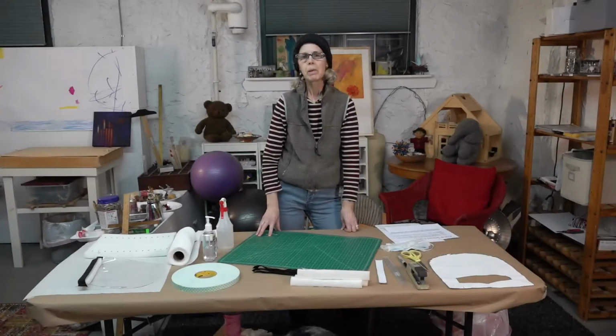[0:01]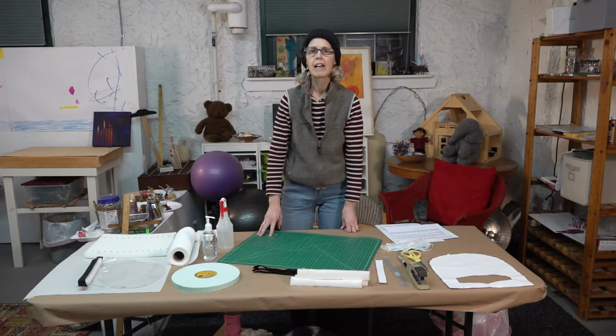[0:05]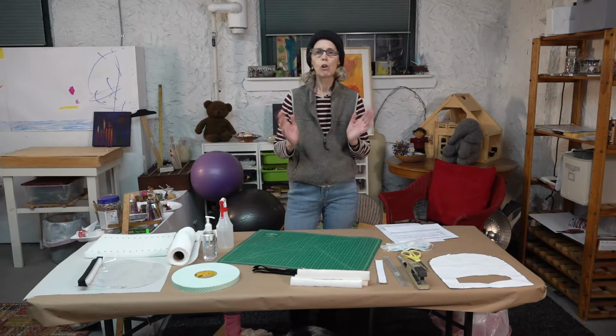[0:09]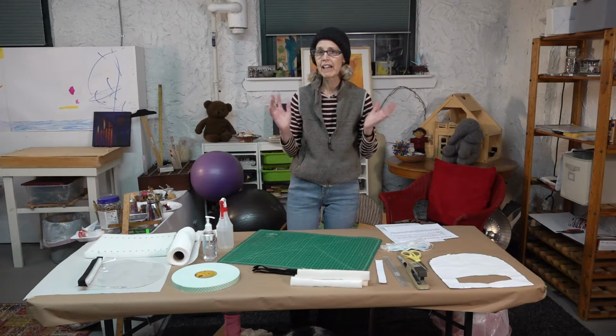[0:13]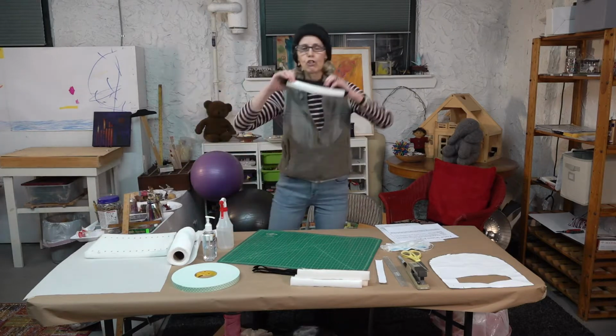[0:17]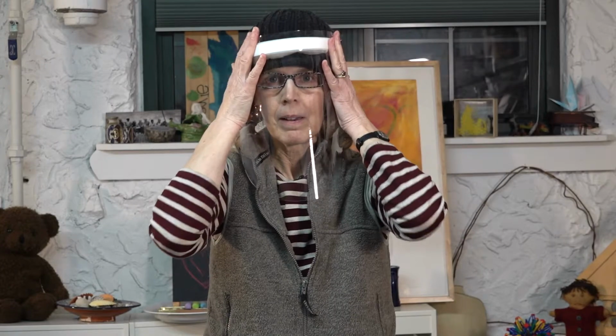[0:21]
I know many of you are already making face masks, and there are lots of videos out there to show you how to do that, and that's really wonderful. Three weeks ago, I started making these face shields. As you can see, they cover the entire face. My sister-in-law, who's a doctor in Boston, said that there weren't enough of them to go around, and doctors and medical professionals really need them.
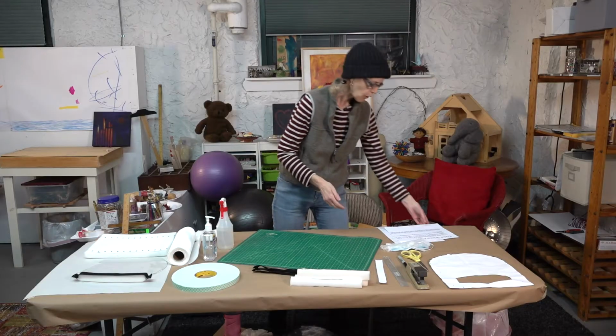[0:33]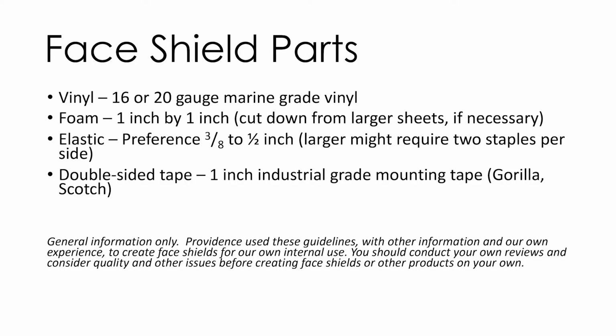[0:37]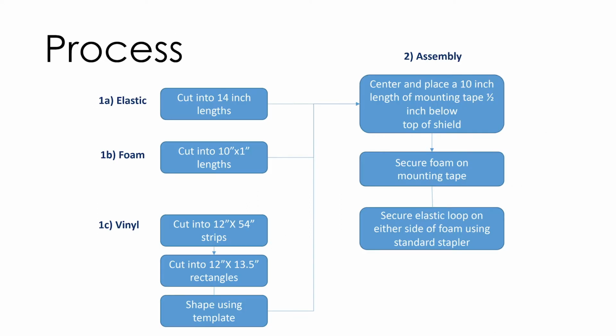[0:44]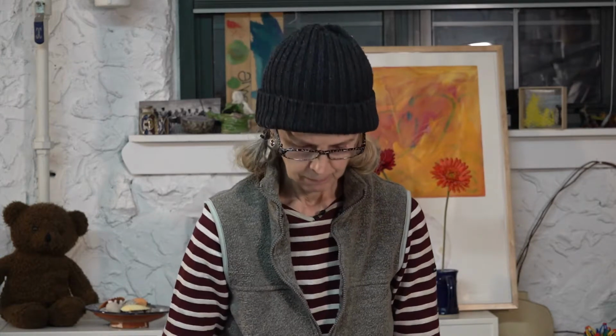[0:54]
My goal is to teach you how to make them using the PDF from Providence Hospital in Seattle. It's a three-part PDF that shows you the parts that you need, the process, and a diagram on the third page that shows you how to make a template. They're really easy to make. I've made 60 myself and have distributed them to various hospitals in the New York City area. Let's get started.
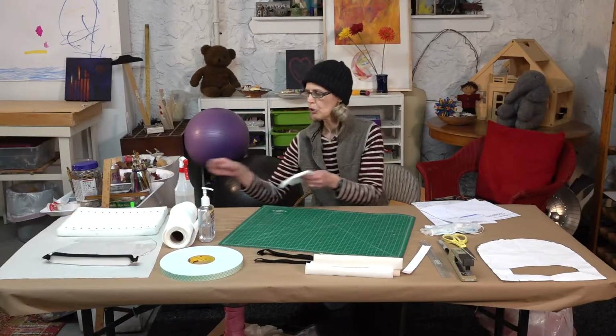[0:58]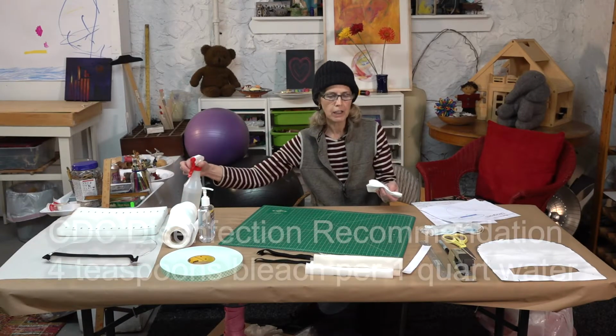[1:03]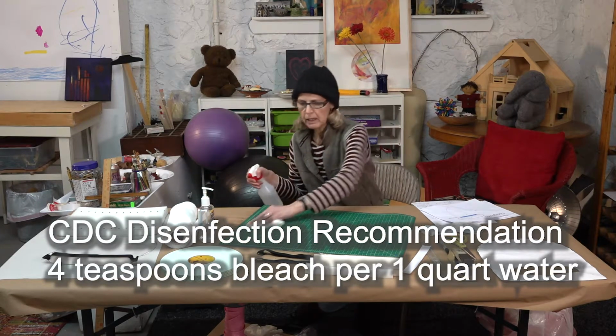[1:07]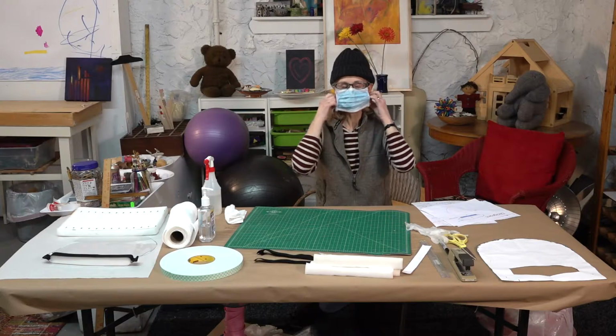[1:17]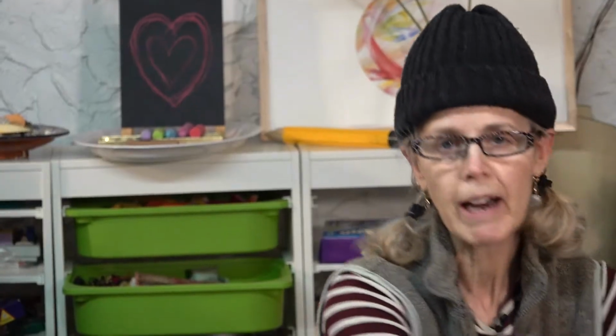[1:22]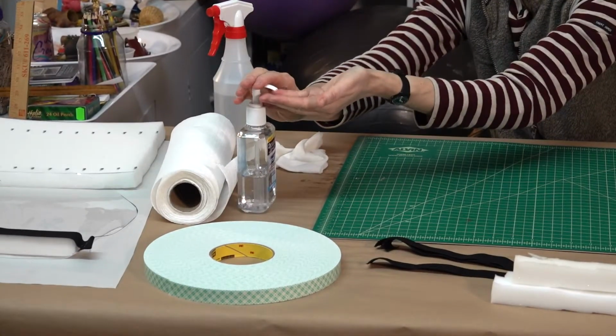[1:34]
The first thing you need to do is make sure that you have a completely clean working area. I like to use a cutting mat and I spray it down with Clorox and water to make sure it's completely clean and sanitary. Usually I wear a mask to make these, and you should too. But for the purposes of demonstration, I'm not going to wear it. It's recommended that you also wear some gloves, but I find it's very difficult to do this fine detailed work, especially using tape, if you have the gloves on. So you do a big glob of Purell, and then you wipe your hands until it evaporates, making sure you get all your fingernails.
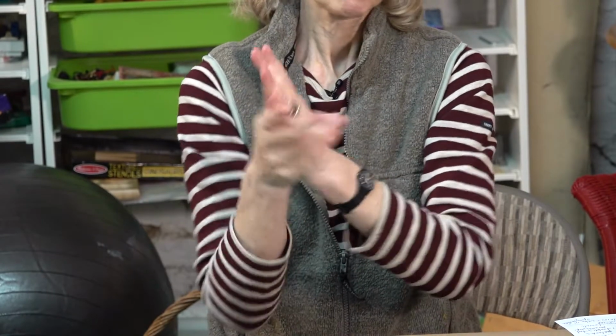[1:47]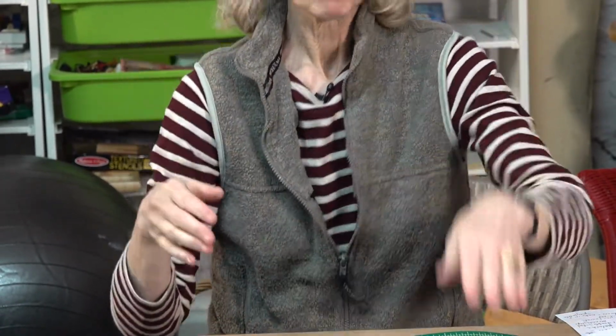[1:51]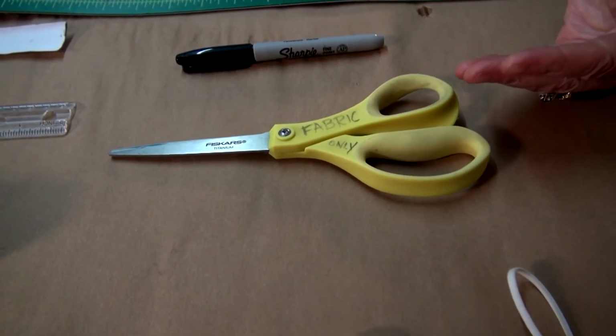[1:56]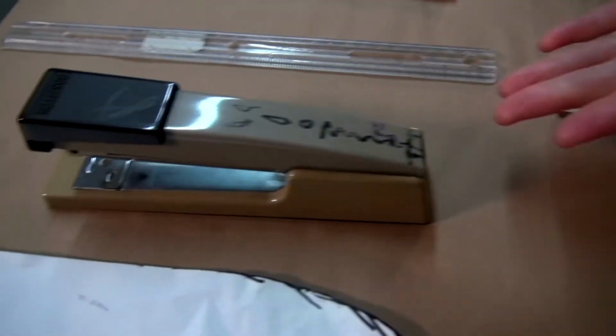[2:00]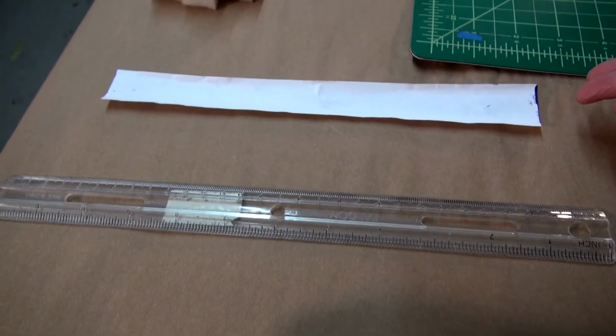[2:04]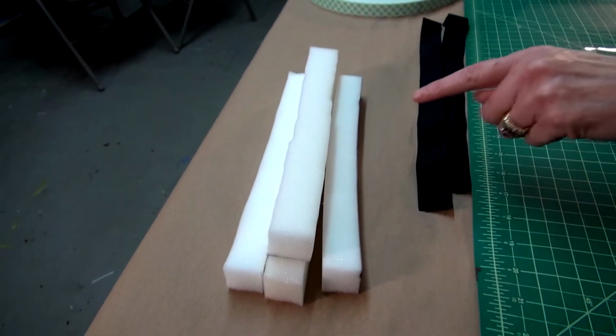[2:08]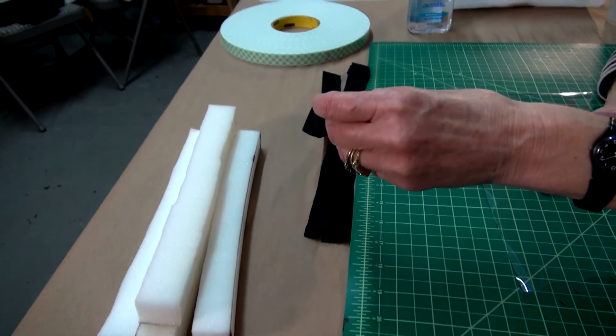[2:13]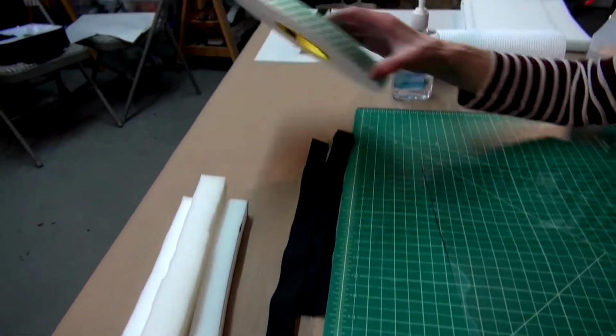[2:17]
So now I'd like to show you what supplies you need to have on hand. You'll need a sharp pair of long-bladed scissors. You'll need a Sharpie. You'll need a regular stapler, a ruler, a 10-by-1-inch strip of paper, some upholstery foam cut into 1-by-10-inch strips, some elastic 1-by-14 inches, and you'll need double-sided tape. You'll also need marine-grade vinyl. I was able to get 10 yards of it on Amazon. The specifications call for anything from 16 to 20 gauge. This is 20 gauge.
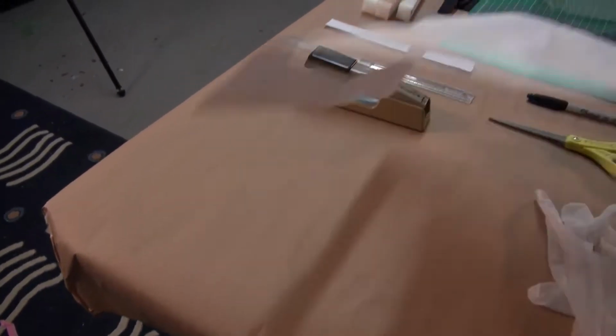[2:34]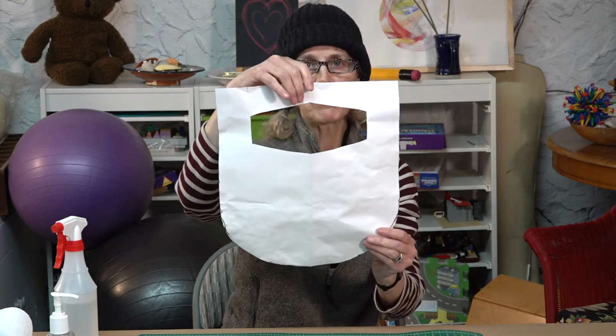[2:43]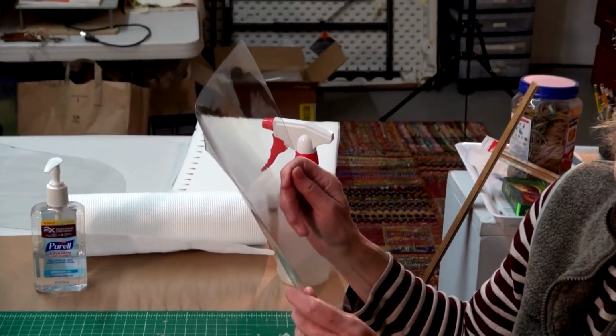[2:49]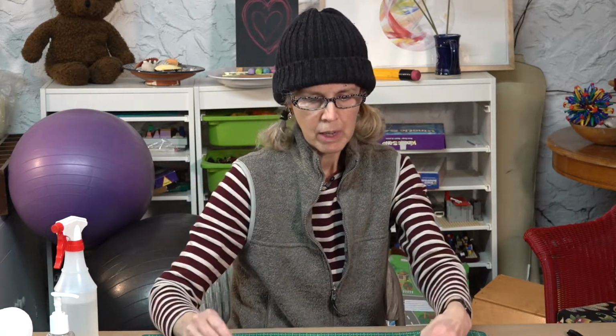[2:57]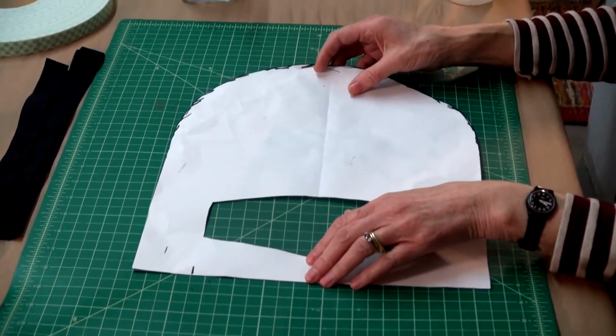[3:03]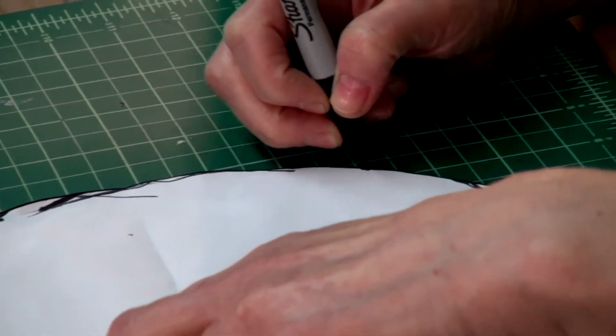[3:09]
It came in a large batch and I had to cut it down. I did that by using a template which I created from the PDF which I described earlier. Ignore this eye window at the moment. We'll talk about that in a little bit. I took the 10 yards and cut it into 13.5 by 12 rectangles. Imagine that this is an uncut 13.5 by 12 rectangle. I take my template and I line it up with the 12-inch side of the rectangle. And I take my Sharpie and I mark that curved edge on the bottom. And then I just cut it out with scissors. But obviously I've done that already.
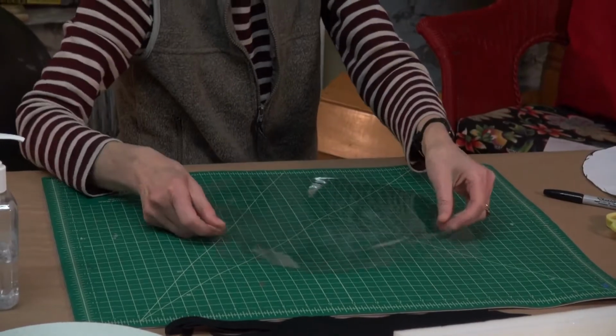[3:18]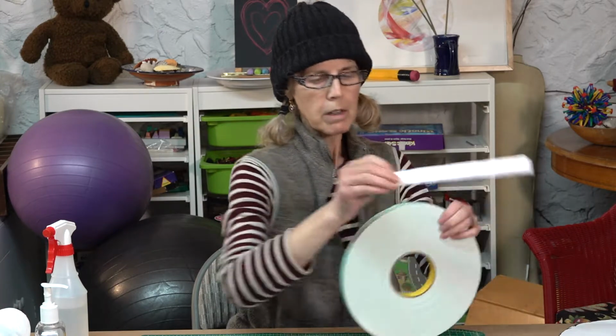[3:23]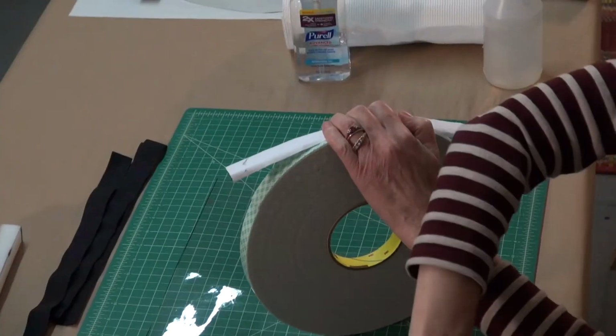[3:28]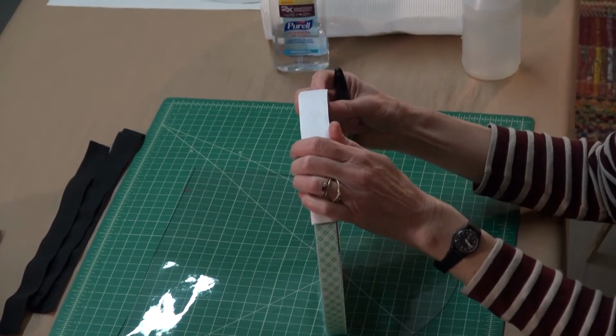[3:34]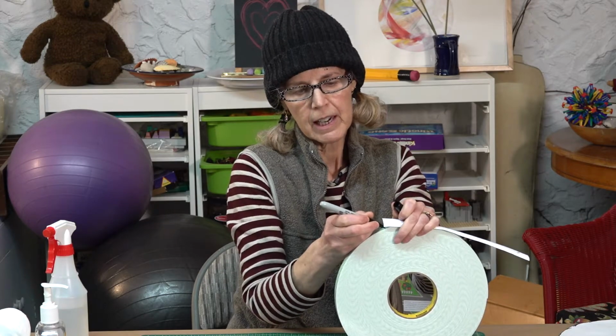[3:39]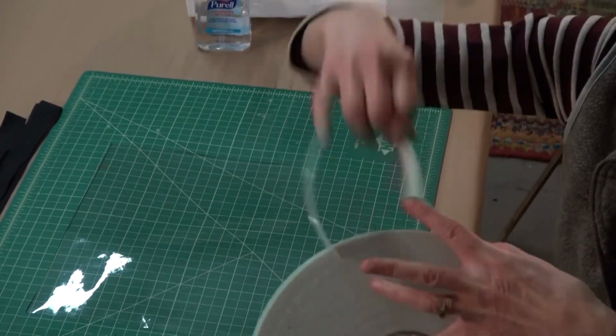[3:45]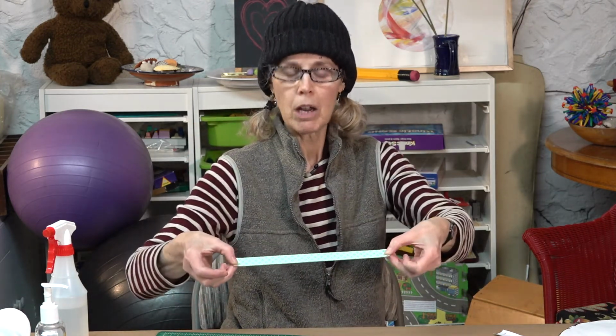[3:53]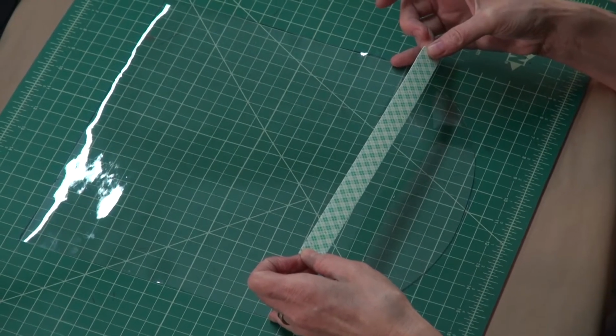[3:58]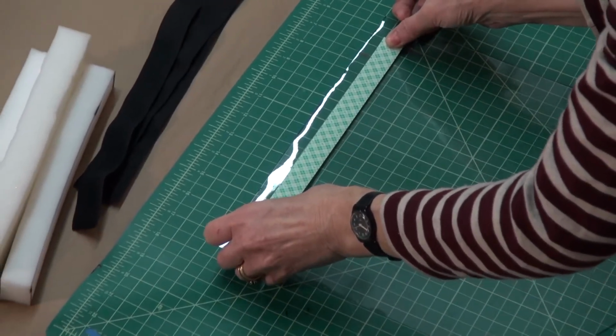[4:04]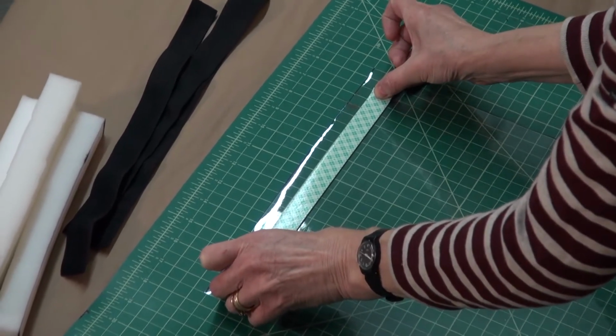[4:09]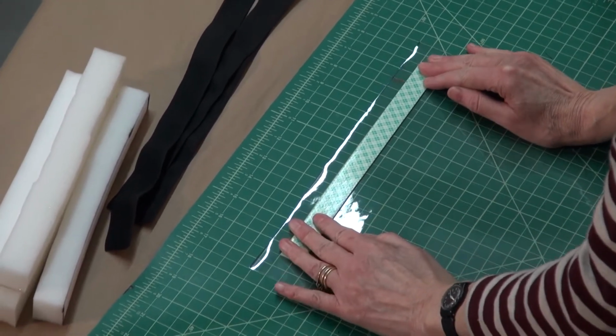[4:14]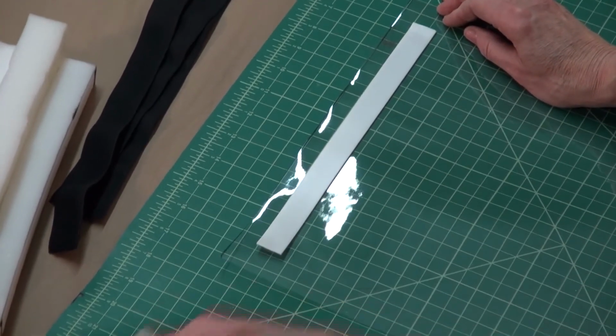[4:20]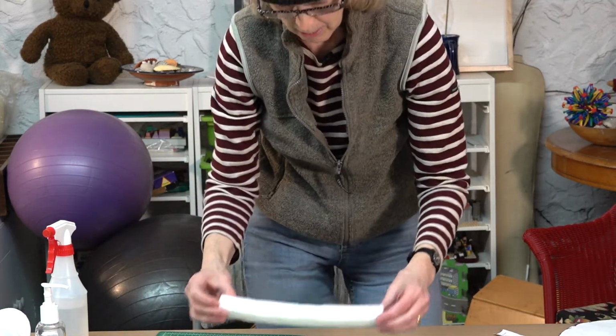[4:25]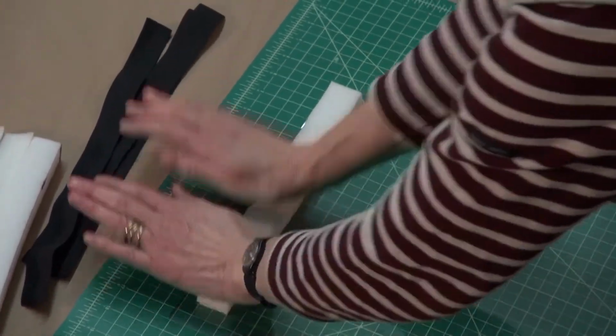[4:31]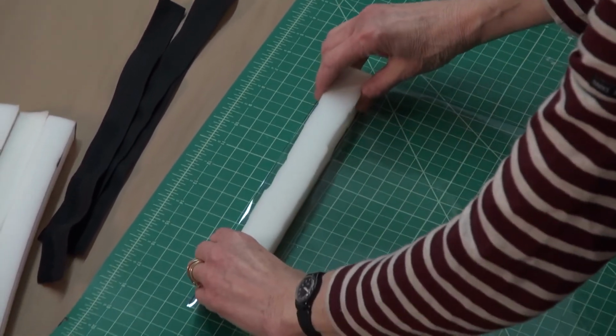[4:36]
The next step is to cut your tape. I use the 1-by-10-inch piece of paper for this purpose, lining up the paper with where the tape ended and my Sharpie to mark off the 10 inches. Once I have the tape, it's sticky on one side and with green paper on the other. I line up my piece of plastic so that I can see 1/2 inch from the top and 1 inch on either side using my cutting mat. And I place the plastic down and press it so that it's completely stuck on there. Then I remove the paper. I take one of my cut pieces of foam and I press that down onto the tape using my palms to make sure it's really stuck on there.
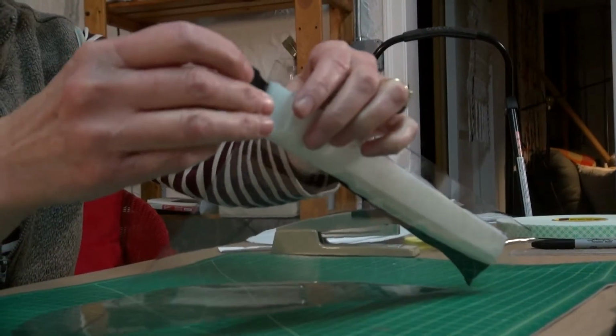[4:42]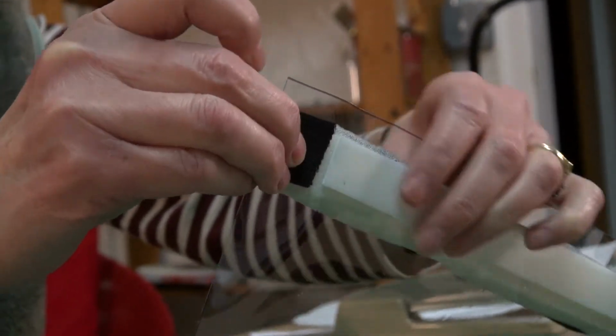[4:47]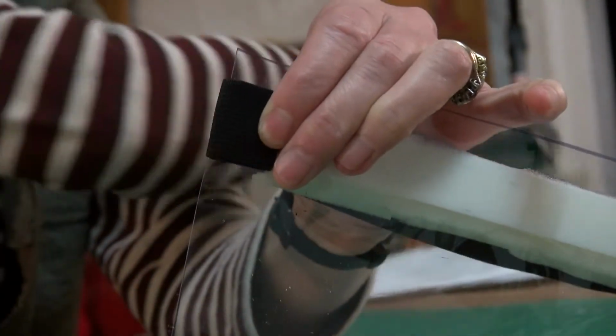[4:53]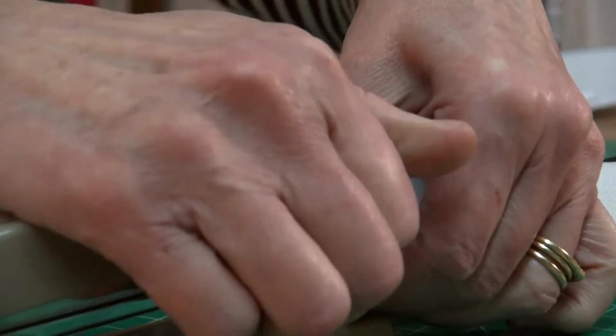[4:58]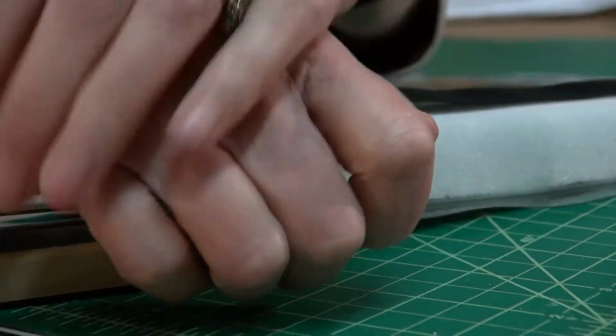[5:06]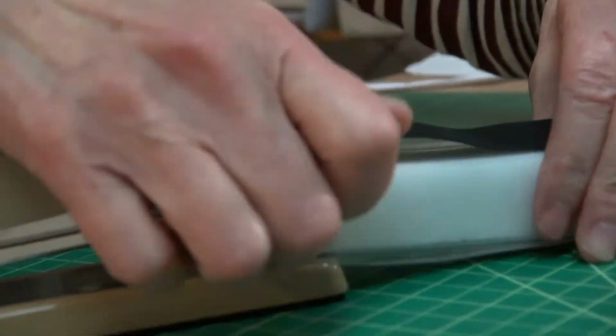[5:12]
Then you take one of your pieces of elastic and you tuck about 3/4 of an inch onto what will be the front of the mask and line it up with that piece of foam. Holding that in place, you can reach for your stapler and you will staple once. Twice. And I like to give it one more for good measure.
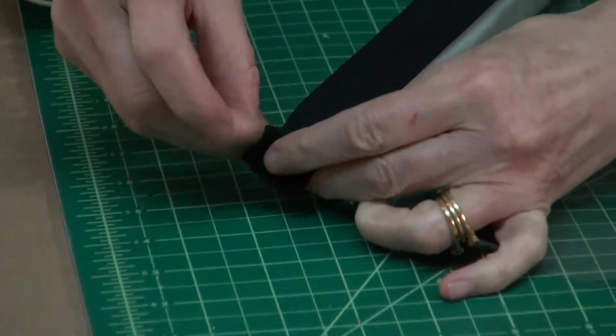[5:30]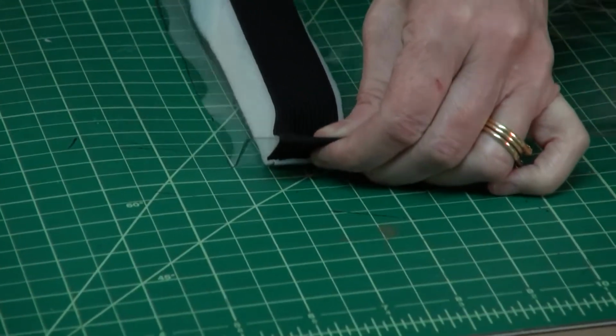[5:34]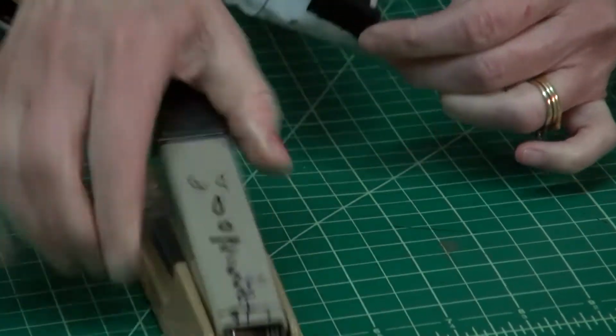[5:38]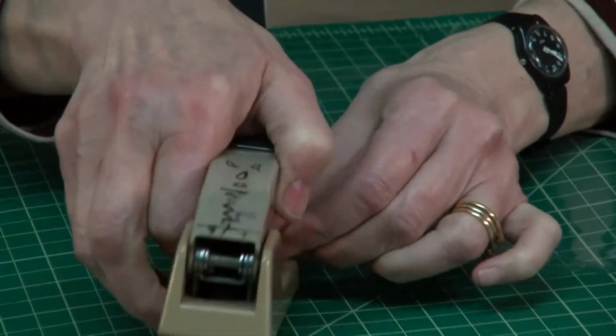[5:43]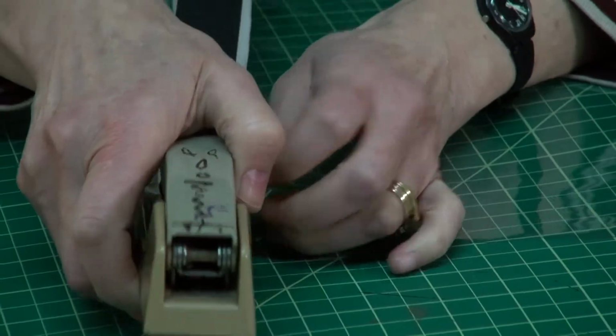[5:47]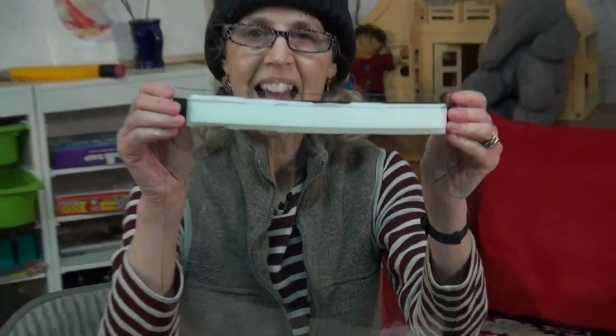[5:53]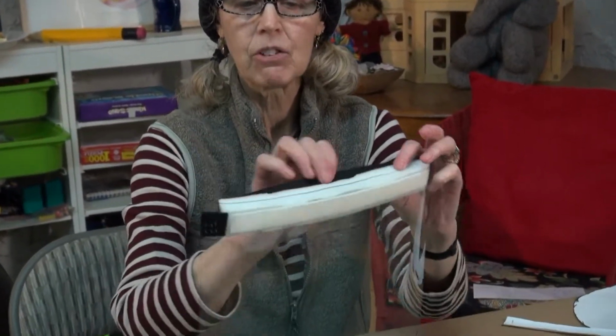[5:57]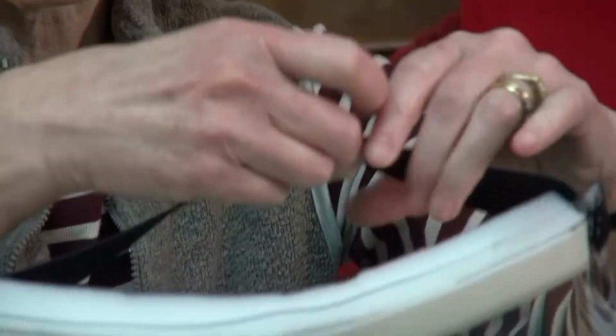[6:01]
Then you turn it around and take the other side, tucking another 3/4 inch. And this will be a little bit more difficult because the elastic is stretching now. And you do one, and then a second, and I like to give it that third, so it's nice and strong. And if it starts to curve up, that's okay. You want the mask to curve around the face, and that elastic should be nice and strong. It's a nice, strong fit.
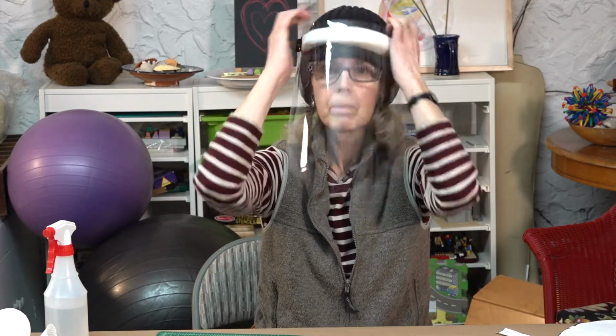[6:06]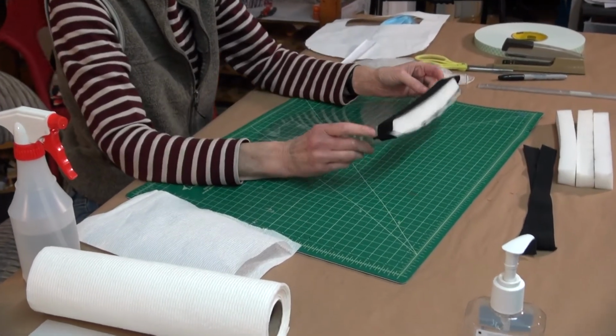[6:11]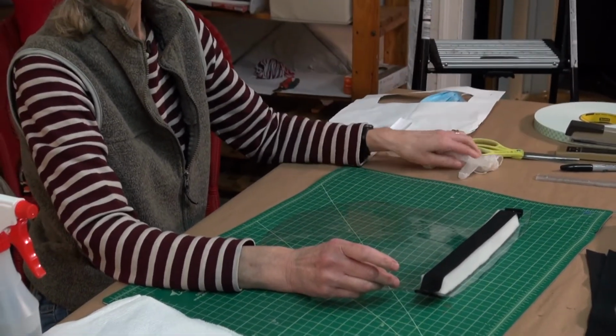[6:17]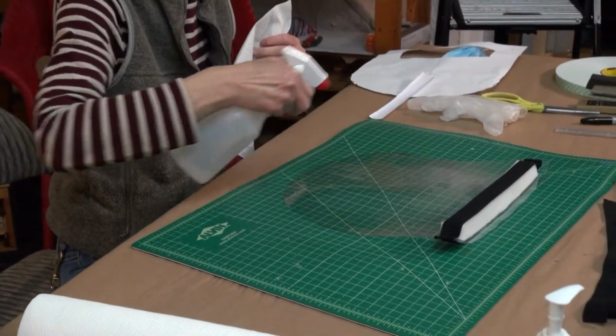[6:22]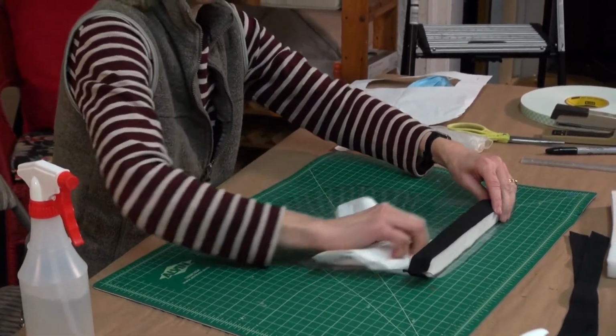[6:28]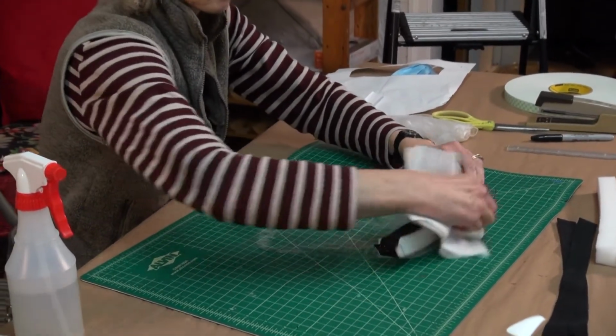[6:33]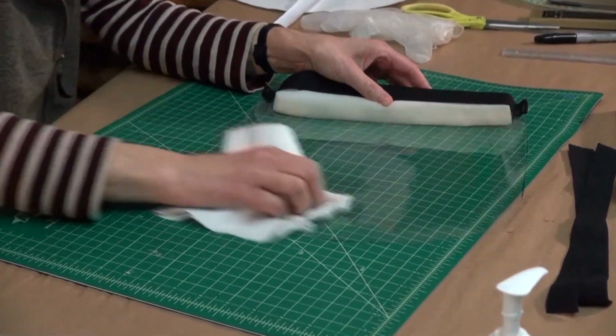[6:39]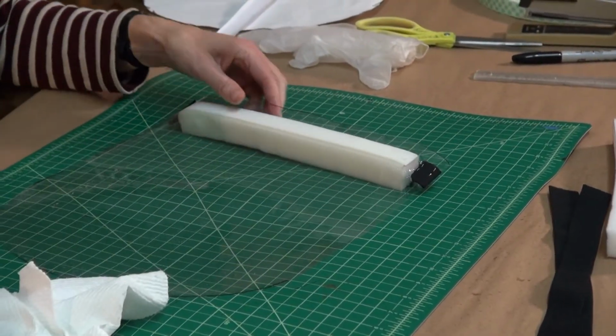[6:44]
The last step is making sure the shield is completely clean before you pack it up for delivery. I would have my gloves on for the entire process, but especially for this last part. You want to spray down the mask and take a clean paper towel and wipe it down, including the elastic and the foam. The Clorox may yellow the foam a little, but that's okay. You turn it over and do the other side.
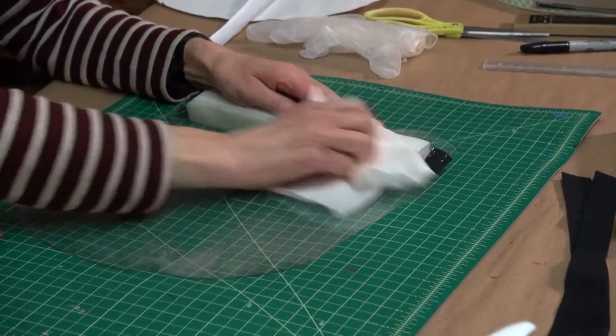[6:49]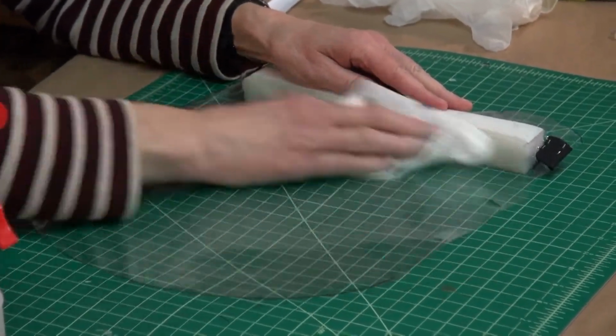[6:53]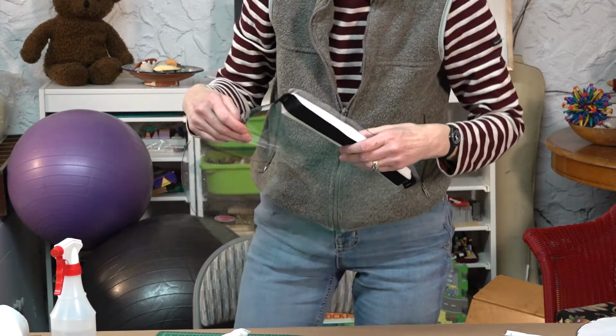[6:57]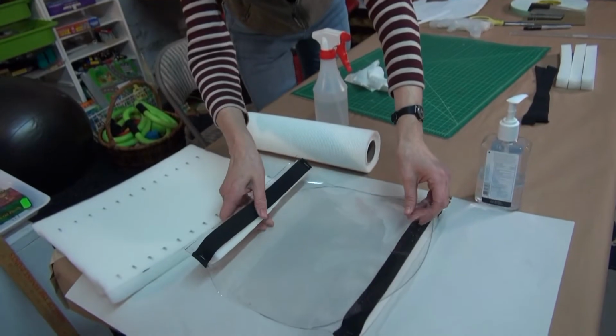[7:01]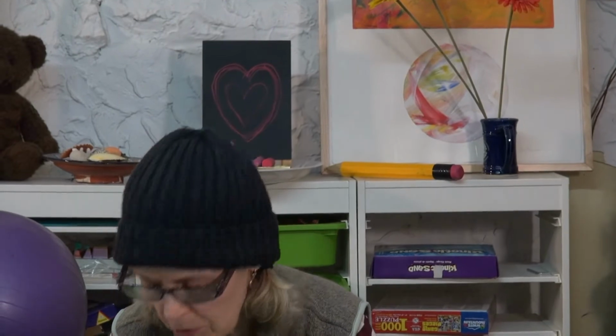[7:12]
Then I make sure I have a clean area to the side of my workspace where I can lay down the finished products and make them ready for delivery. It might be hard to find the marine grade vinyl right now, so I want to show you another solution using report covers that you can get from Staples.
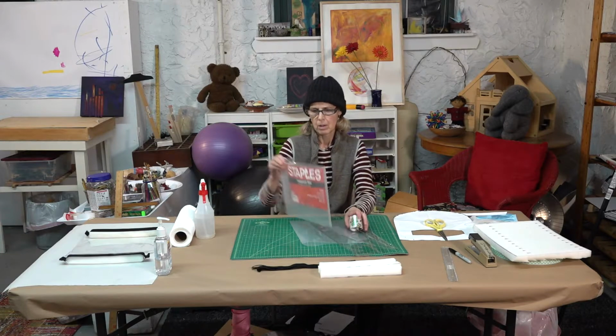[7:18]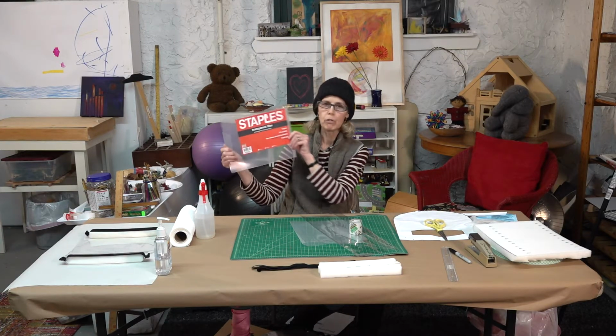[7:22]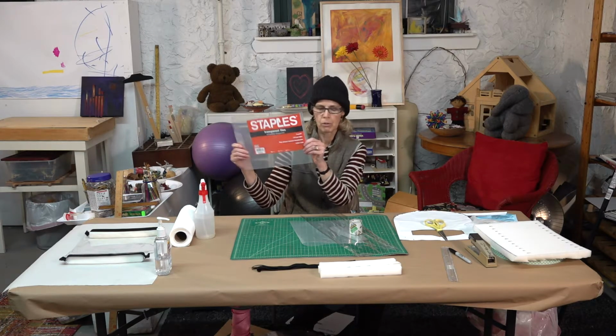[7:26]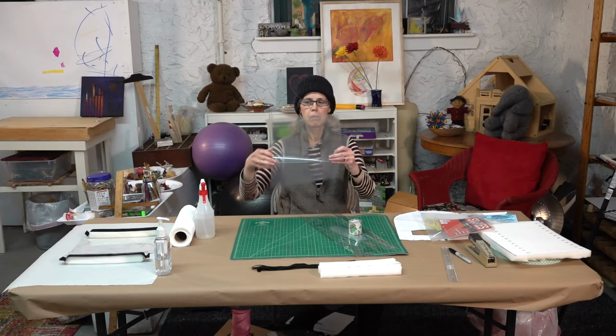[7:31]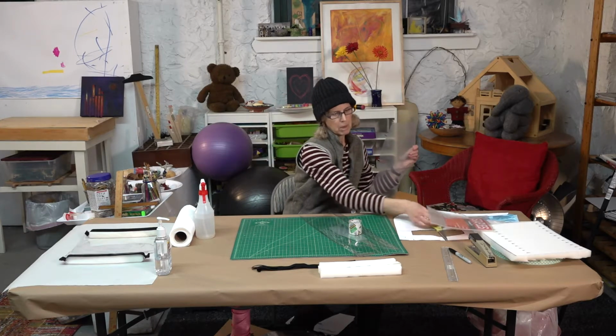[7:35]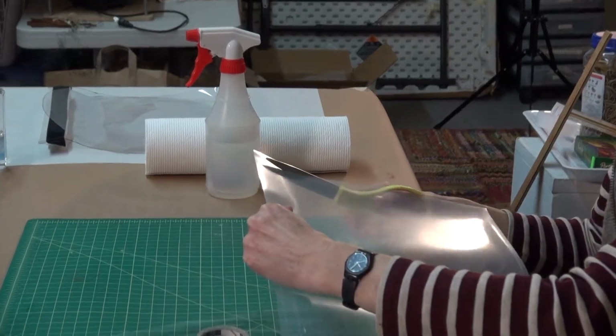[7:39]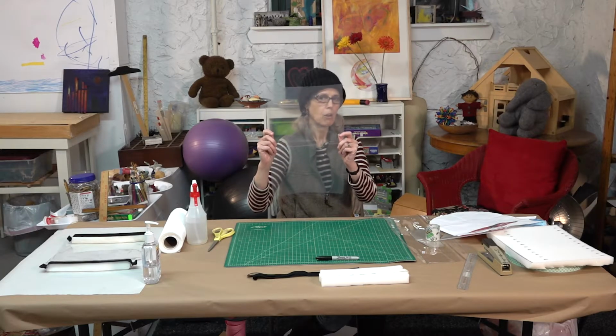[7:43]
This is a 9.5 by 11 transparent file from Staples. You can also use transparent report covers. I have already cut the sides of this one, and I just need to cut the tab at the top. So I'll take my scissor and I'll do that now. The goal is to create a rectangle.
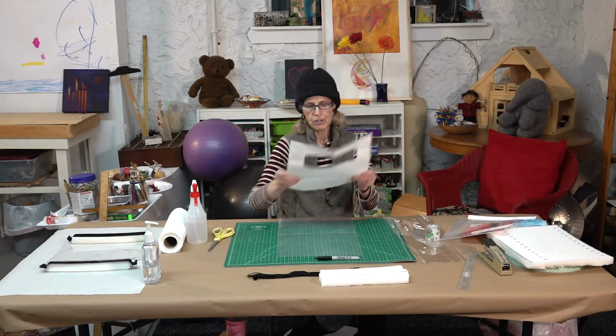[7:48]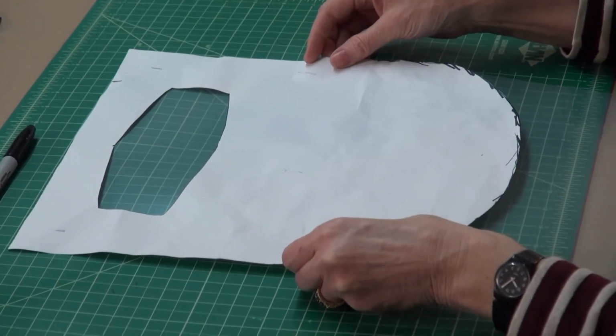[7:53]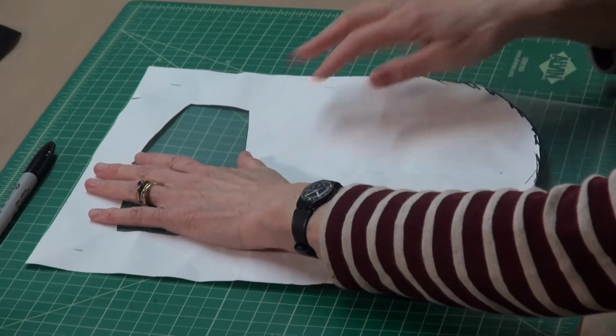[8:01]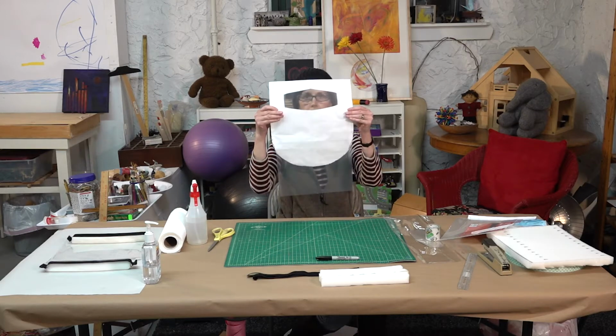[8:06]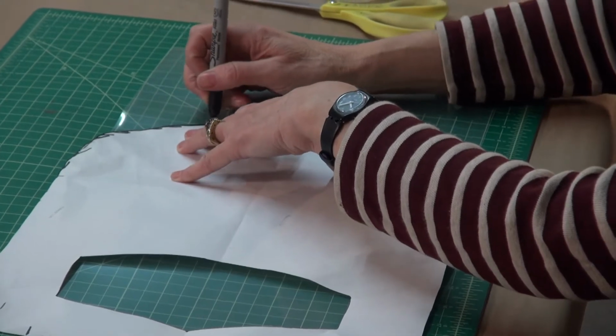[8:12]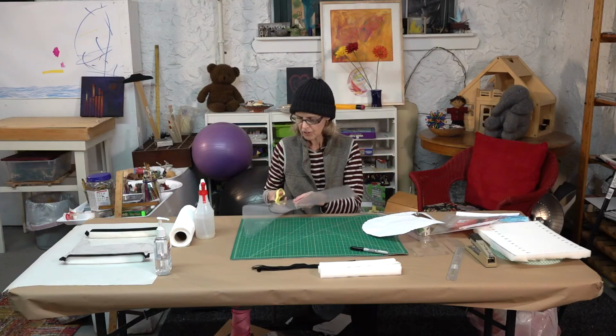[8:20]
And you might notice that this piece of plastic is not quite as wide as your template. That's okay. It's only about an inch short, and you're going to line your template up so that it's even over the rectangle. You'll also notice that it's quite a bit longer than your template. That's okay too. You're going to mark your plastic using the template and the Sharpie. Then you're going to cut on that curved line just the same way you do with the marine grade vinyl.
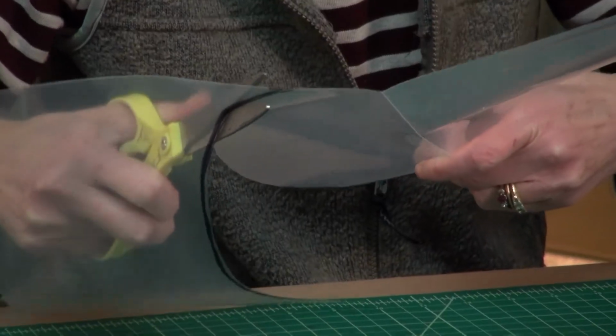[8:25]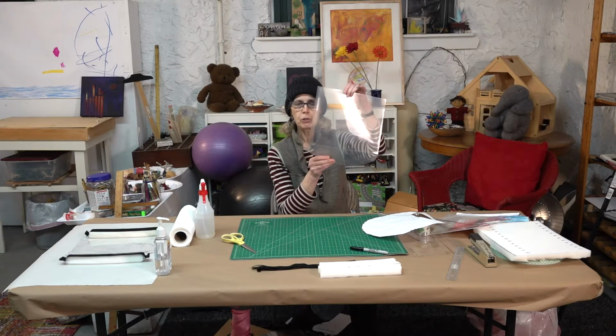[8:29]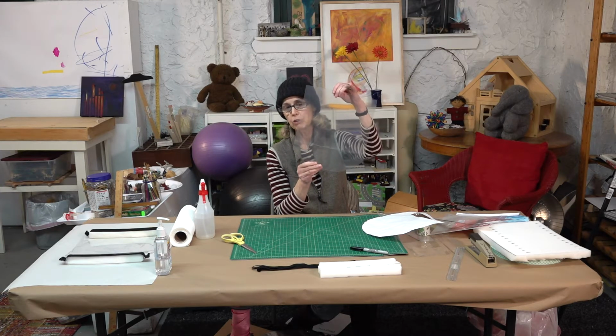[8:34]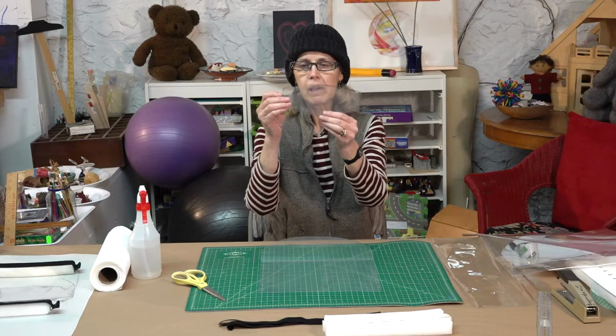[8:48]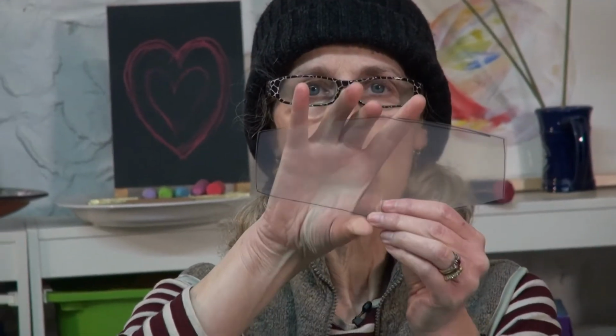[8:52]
I make sure that the fold in the file folder or report cover is at the bottom of the shield, for obvious reasons. You'll also notice that this piece of plastic is not as transparent as the marine grade vinyl. You will need to cut out an eye hole. I created a template that's 2 inches on either side and 4 inches in the middle, creating a shape that fits perfectly over your eyes.
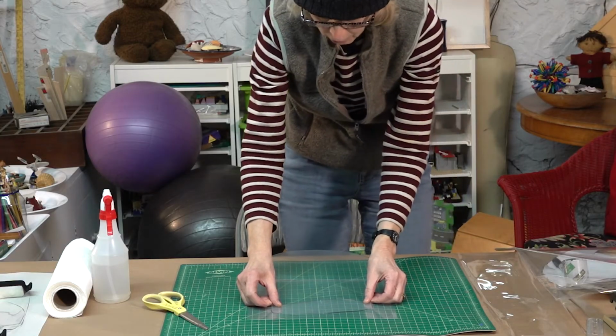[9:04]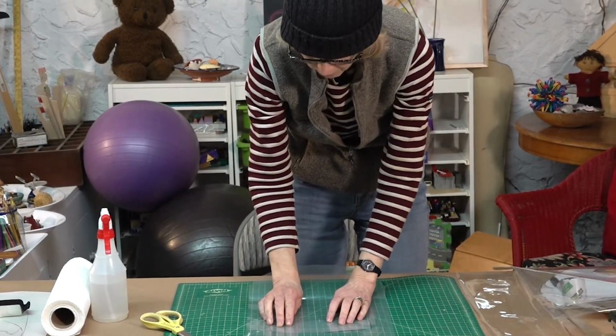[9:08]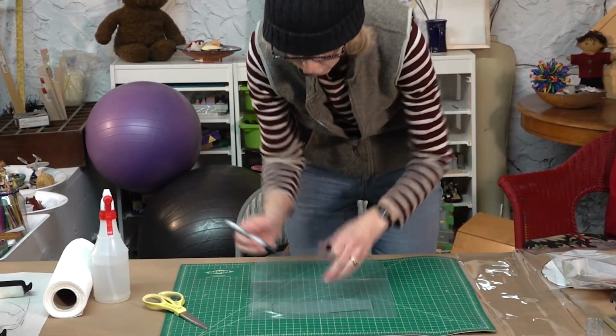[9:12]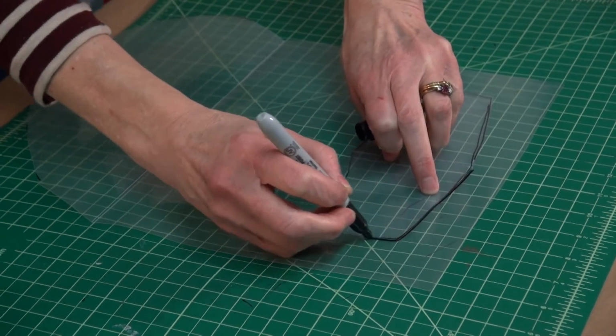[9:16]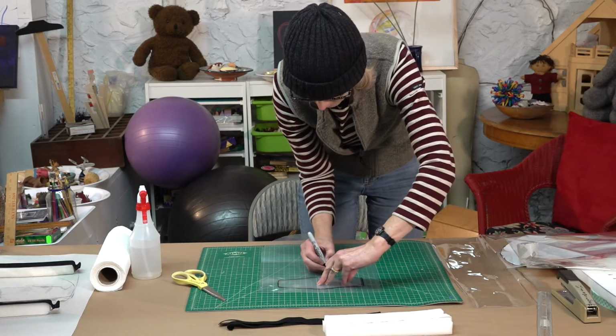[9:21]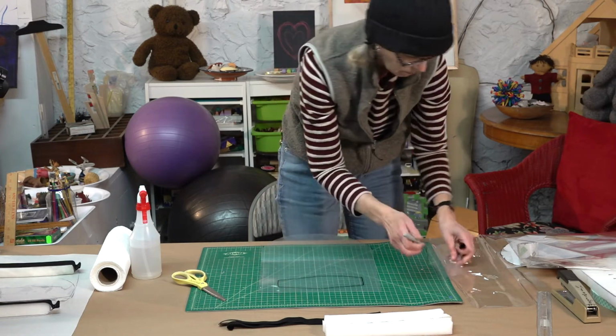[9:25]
I'm going to place that at the top of the mask, about an inch from the top, and 2 inches from either side. I'll take my Sharpie and mark that out. These Sharpie marks can be cleaned with alcohol if you want your mask to be really pretty.
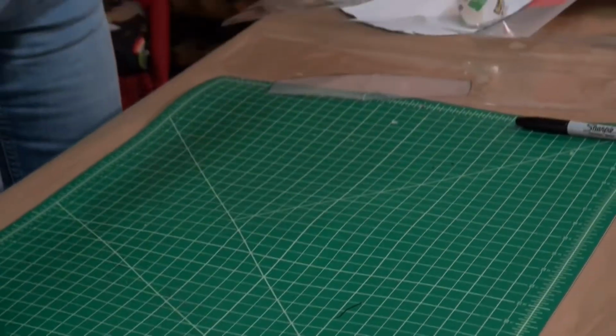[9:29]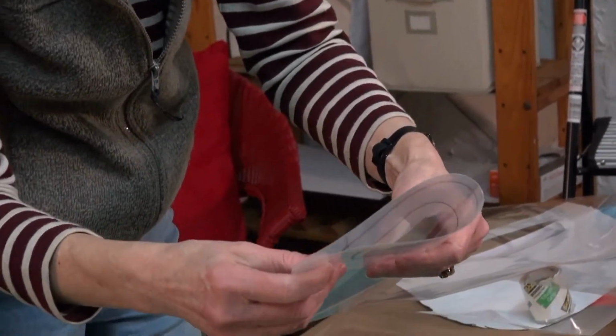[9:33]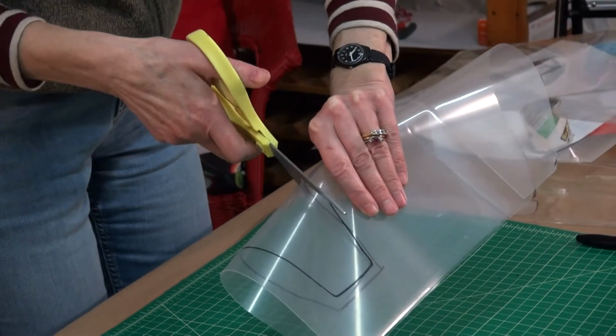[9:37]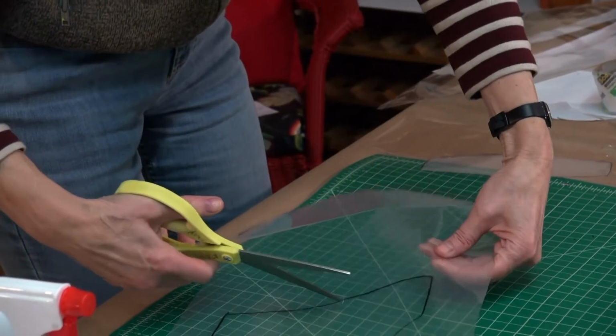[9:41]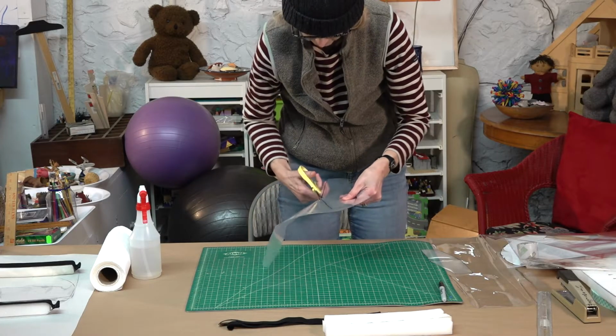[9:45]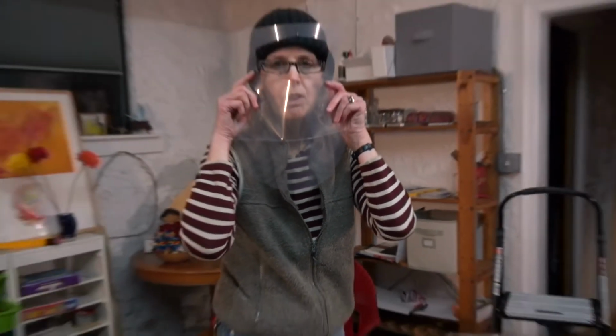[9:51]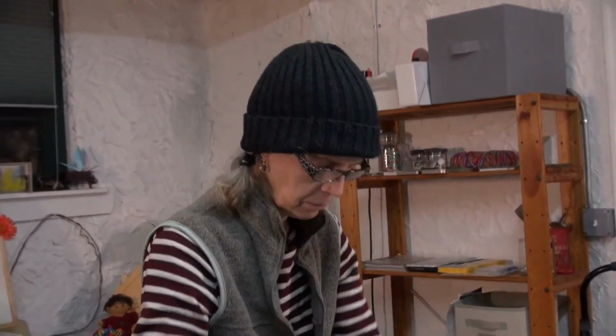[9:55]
Then I fold this mask, or shield rather, not so it makes a crease, but just enough so that I can get in to begin cutting that around. So you can see there's a good space for someone to look through.
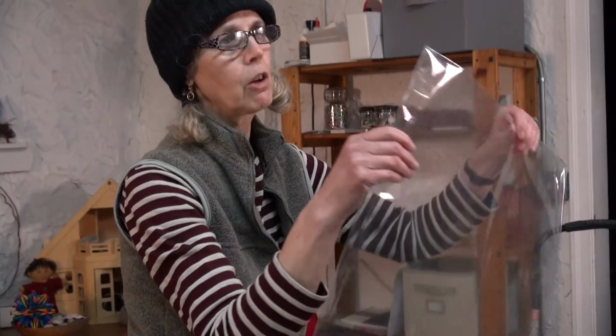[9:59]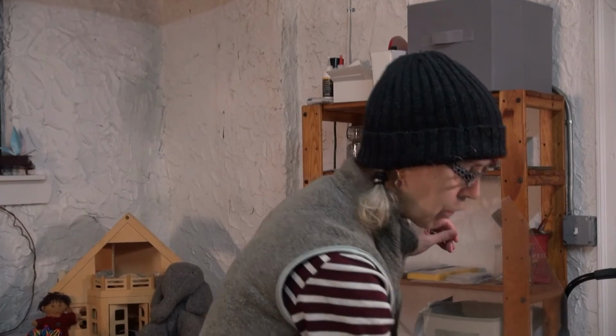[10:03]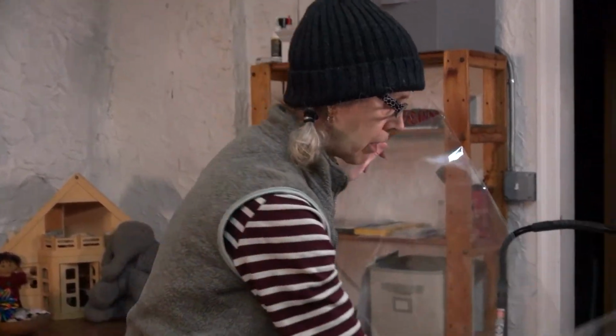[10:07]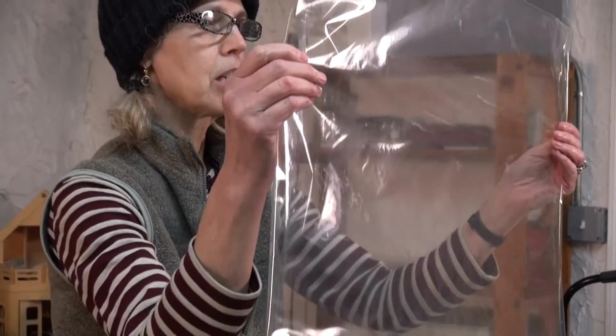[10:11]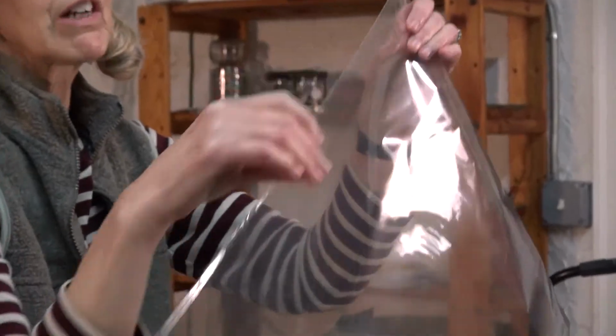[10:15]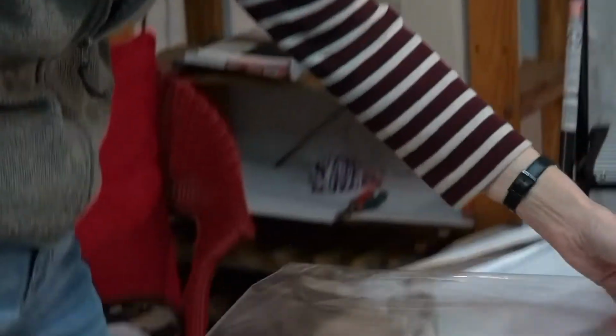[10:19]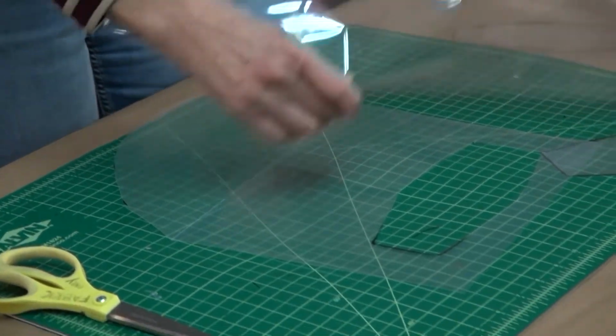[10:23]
Then I take another more transparent material, and it's not marine grade plastic or vinyl. If you have a scrap of marine grade vinyl left over, that's wonderful. But if you don't, you can use this more cellophane-like material that might be found in an art supply store or even a floral shop. This material isn't as strong as the report cover, so we're going to double up to make sure it's strong enough.
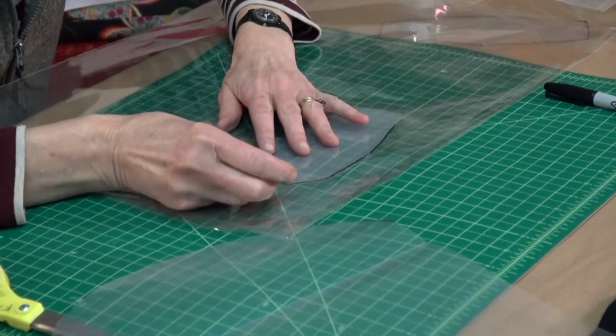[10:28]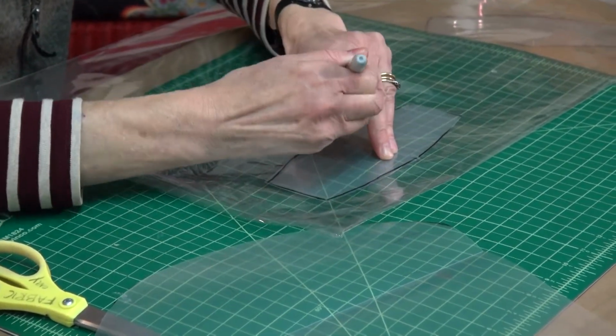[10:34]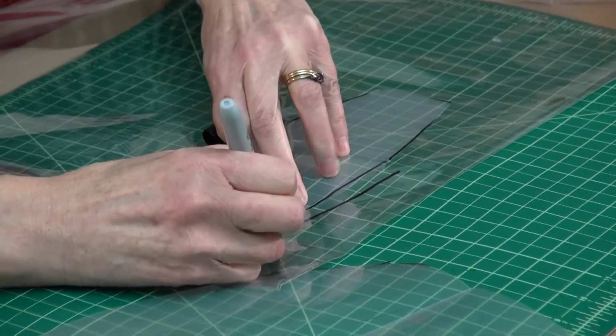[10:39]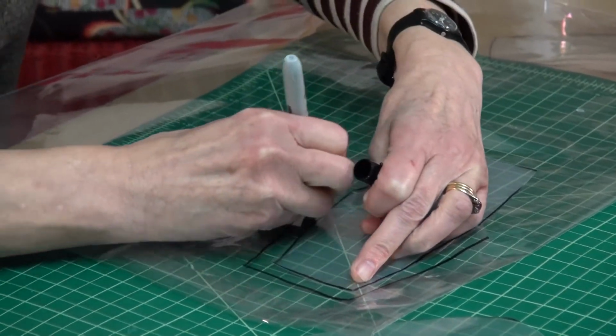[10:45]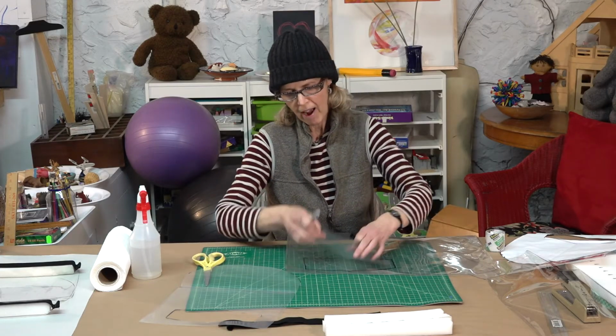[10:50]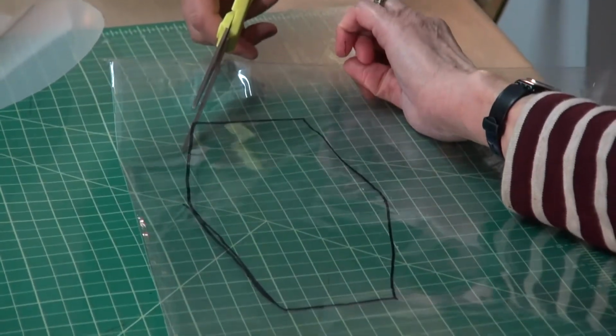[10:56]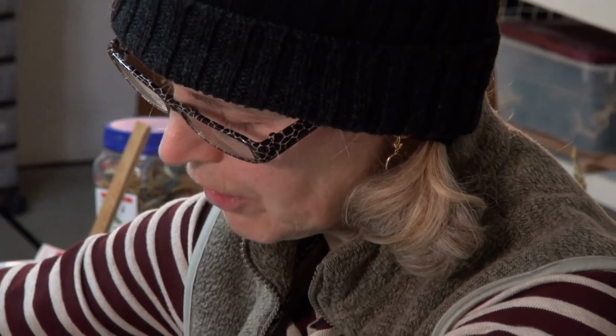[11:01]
I'll place my template down on the clear mylar or plastic. And I'm going to mark a half an inch out from the template all the way around. Just enough so that you have some overlap. Then I'm going to take my scissors and cut out those two pieces of clear mylar or plastic. Okay, and we're ready to go.
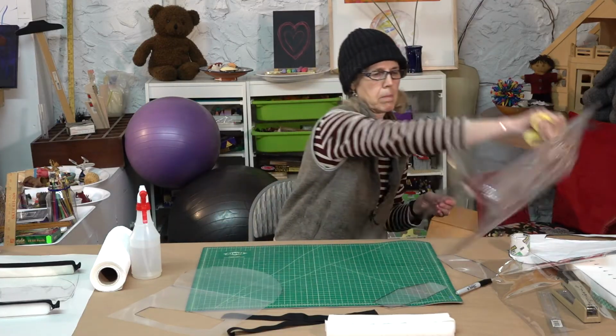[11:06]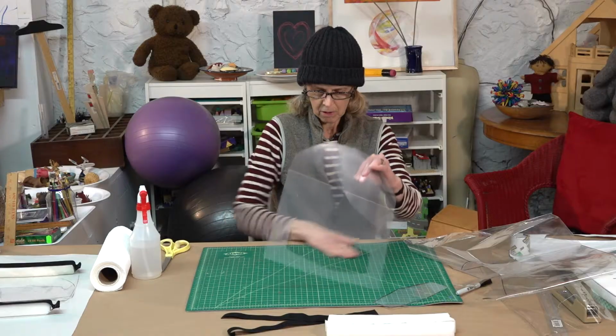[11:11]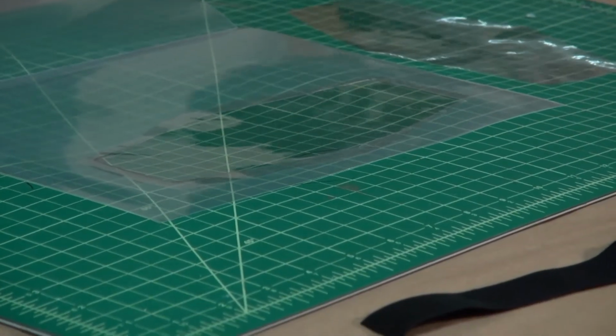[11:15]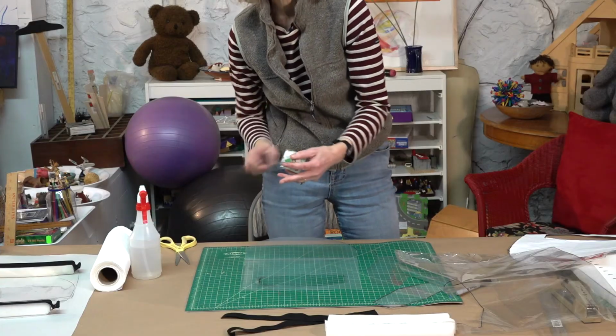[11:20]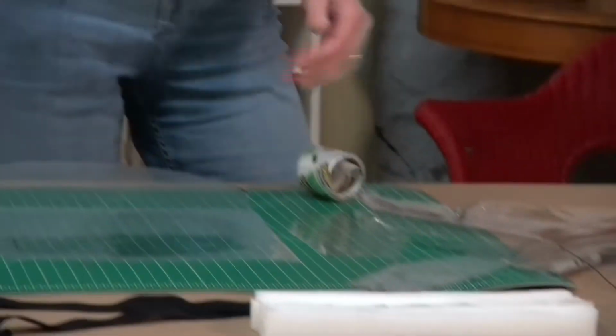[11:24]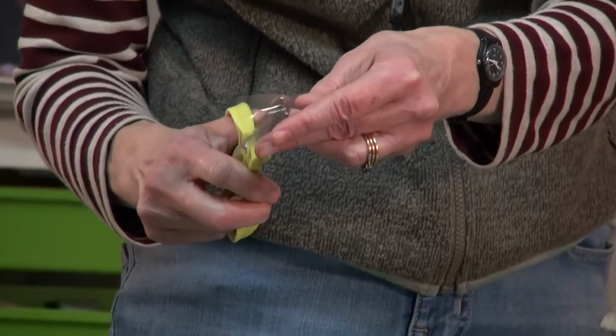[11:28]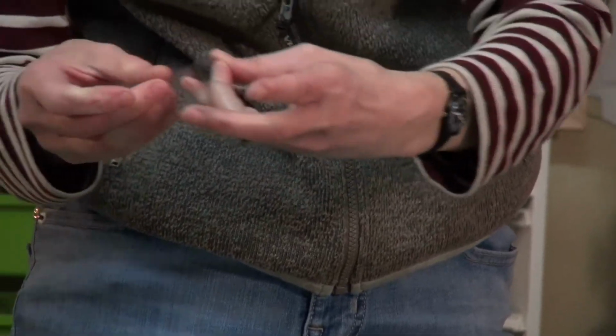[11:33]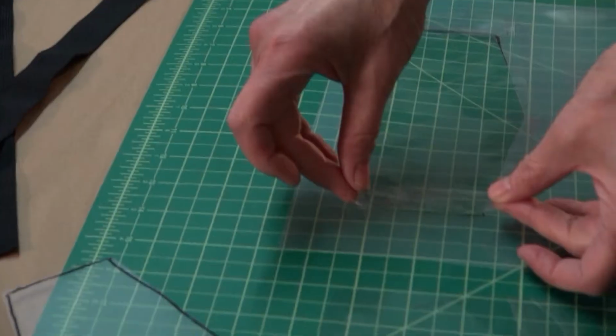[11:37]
And the next step is to tape these down onto the shield. For this purpose, I use clear packing tape. This process is very difficult to do wearing gloves, so I generally don't, and then just clean up very well afterwards. I cut 3-inch strips and place one on each end.
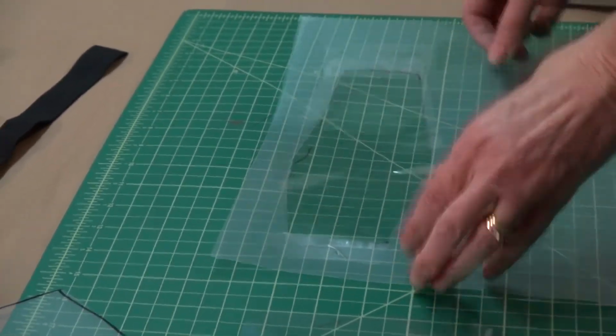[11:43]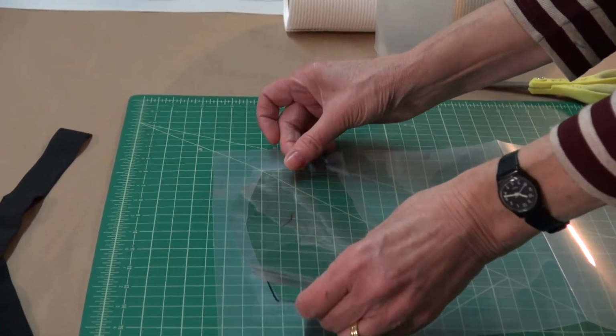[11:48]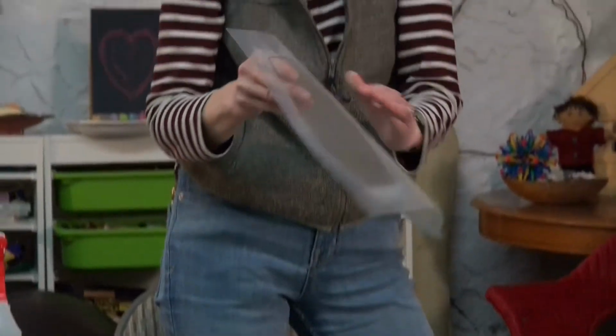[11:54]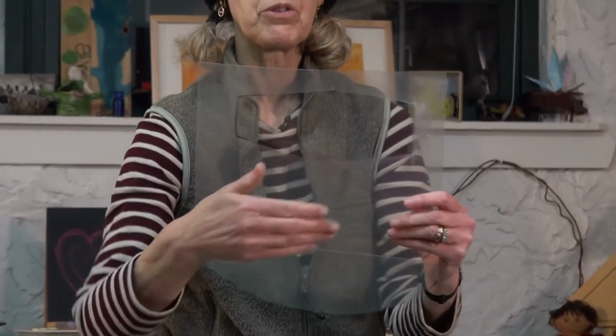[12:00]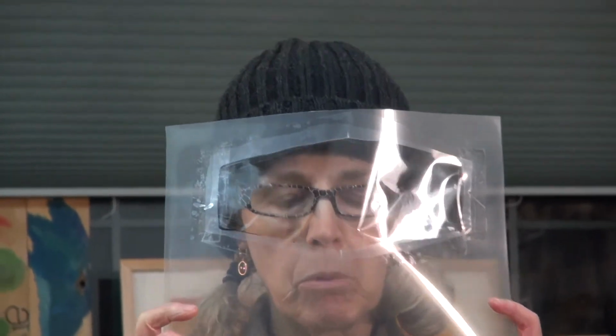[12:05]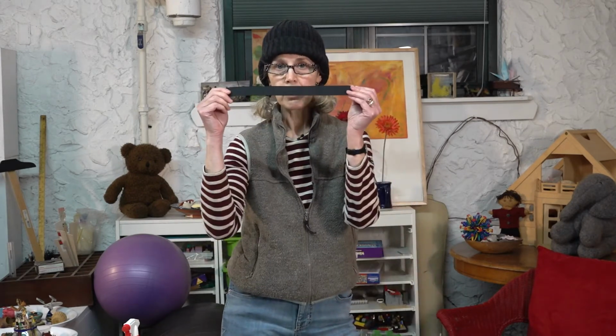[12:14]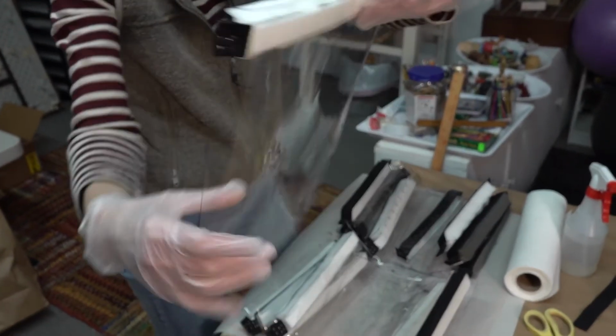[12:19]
Then I turn the mask over and I take the second piece and do the same thing. So you get the idea. You're sealing both pieces of this clear plastic all the way around on both sides. And then this face shield is much clearer to see through. From there, you build it the same way that you built the other one, using your tape, your foam, your elastic, and finishing up with a good dose of Clorox and water before you deliver to the hospital.
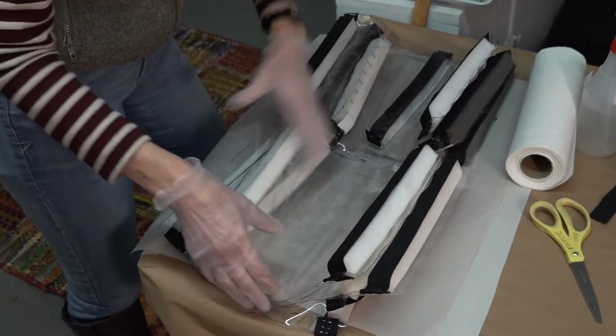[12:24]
As you can see, these shields are not that hard to make. And I know that making them over the last month, which has been a crazy time, has just given me so much meaning and purpose. I know so many people working in the medical field on the front line, and I know that I'm making something that is truly helping them. And you can do that too.